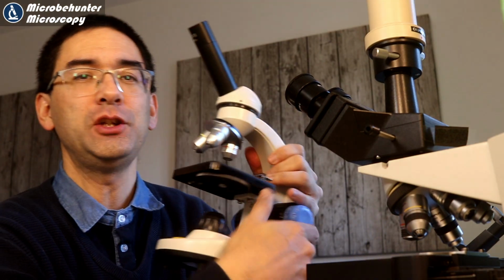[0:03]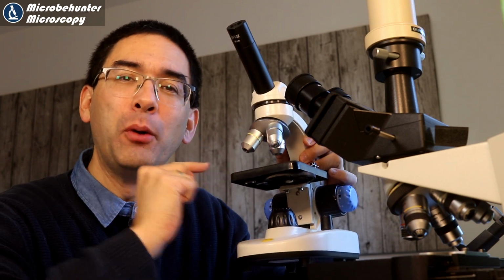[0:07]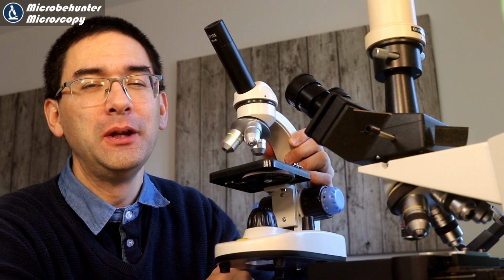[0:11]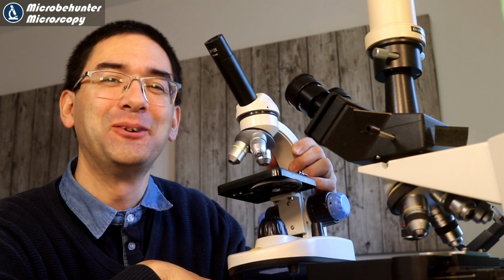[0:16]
Hi, Microbehunter here. This here is a low-cost introductory microscope, and today I want to convert this one to a polarized light microscope. It's not that difficult to do, but I did some tinkering today and I also took the microscope apart. So let's have a look at it.
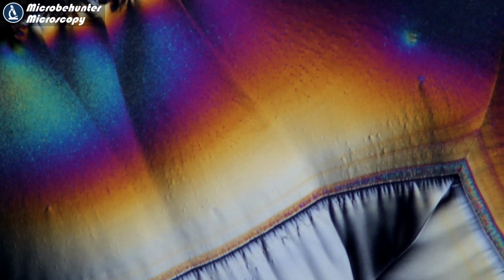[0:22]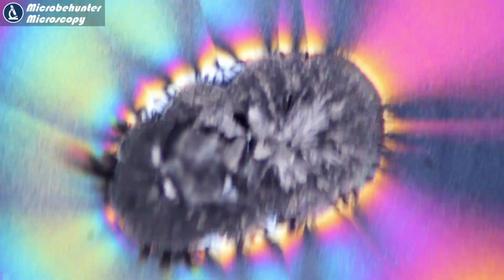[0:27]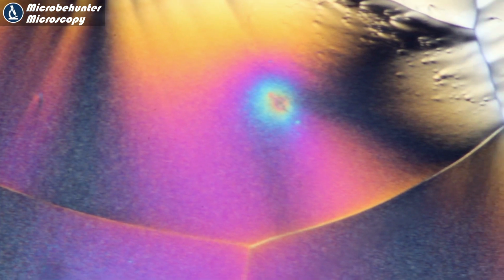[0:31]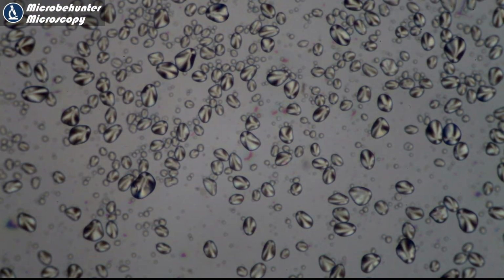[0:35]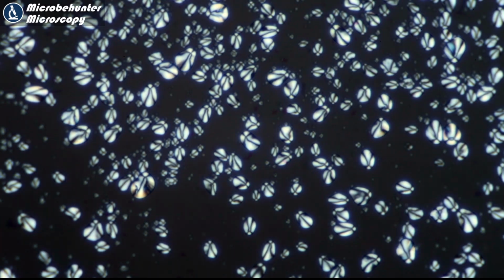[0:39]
So first of all, I want to show you some pictures in polarized light simply to make you a little bit motivated to try out this method. This here, for example, is crystallized vitamin C. I've actually made a separate video. Link is below in the description. And these things here are potato starch grains. And you can also now see that in polarized light, they start to shine up nicely on a dark background.
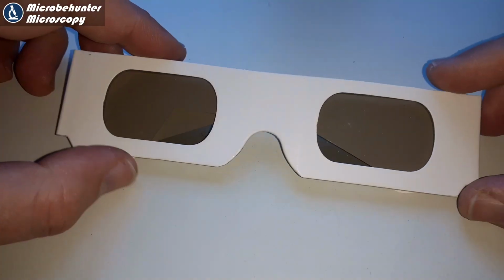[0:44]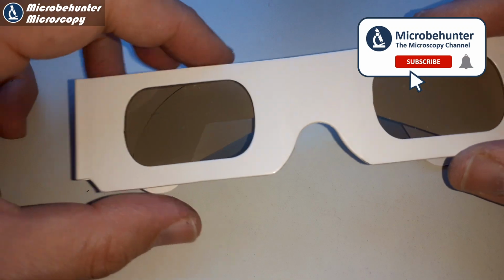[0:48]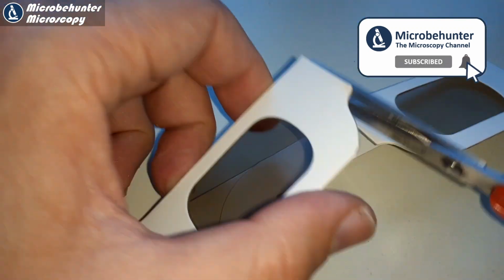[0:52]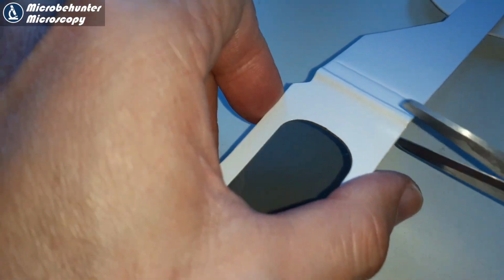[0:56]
If you want to do polarized light microscopy, all you need is those 3D glasses. Be careful, not all of them work. They have to be or should be RealD compatible, whatever that means. I also put a link into the description here.
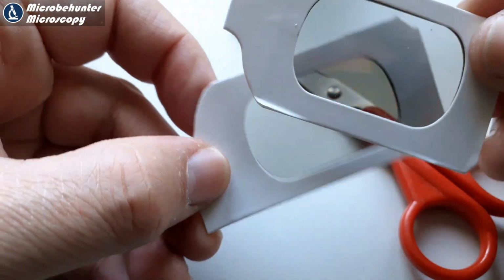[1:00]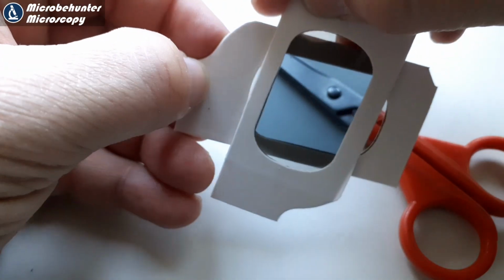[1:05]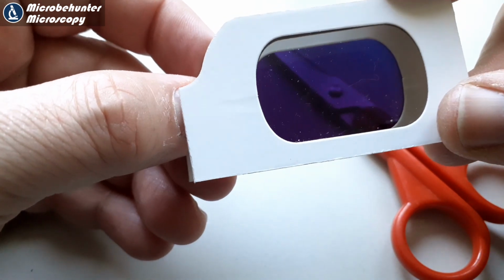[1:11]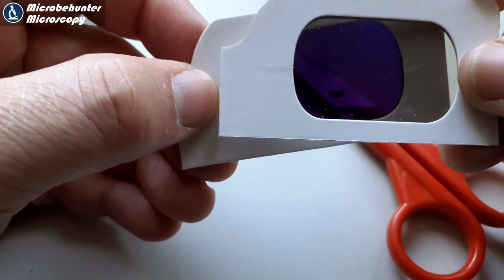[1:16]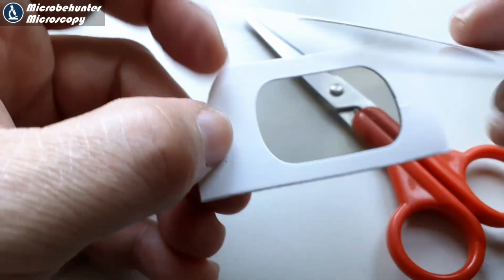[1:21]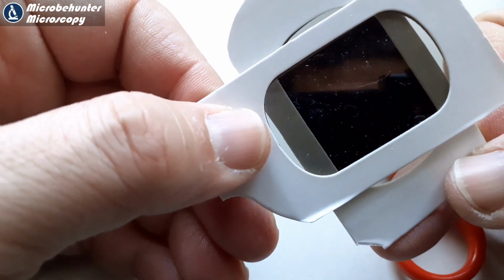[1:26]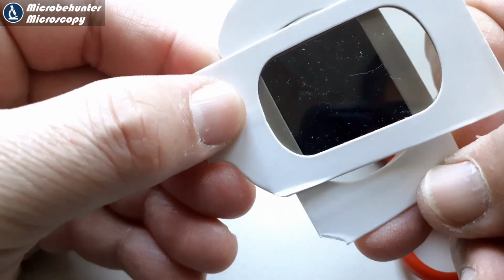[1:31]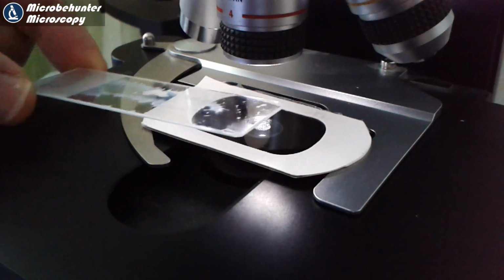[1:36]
And now you have to place them over each other in a correct orientation, and you have to rotate them against each other. And this orientation does not work, for example, because it does not turn completely black. This one here is already better, but you can still see that a little bit of light is able to go through. It might be a little bit difficult to see here on the video, but there is one orientation that, if you try that out, will actually be completely black. So that's the one that we want, okay? And if you're able to find this orientation, then you better remember how they are placed on top of each other, because this is the orientation that we have to retain when we put it under the microscope.
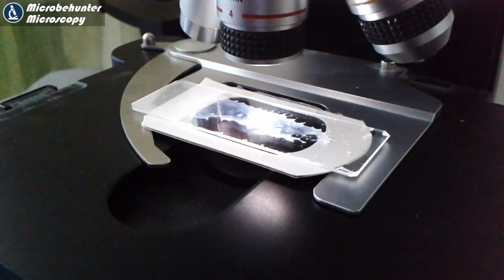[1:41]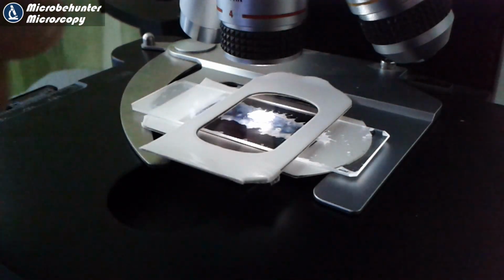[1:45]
So right now I'm simply placing the filters on the stage, the specimen slide on top, and then the second filter. My recommendation is that you buy yourself some linear polarizing filters. They're a little bit more expensive than those 3D glasses, but they make life a little bit easier because the orientation and the side is not important at all. Those 3D glasses have so-called circular polarizing filters, and there the orientation is kind of important. And if you accidentally flip the filter around, you won't get a proper effect.
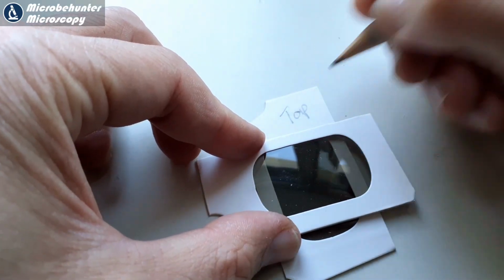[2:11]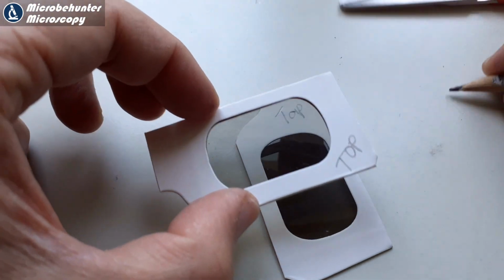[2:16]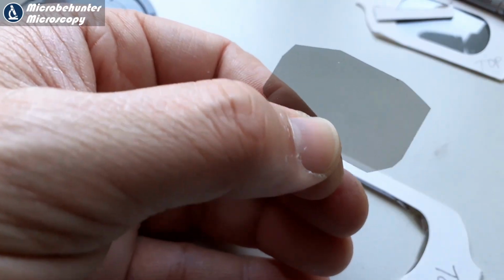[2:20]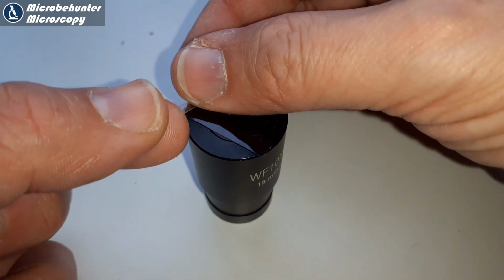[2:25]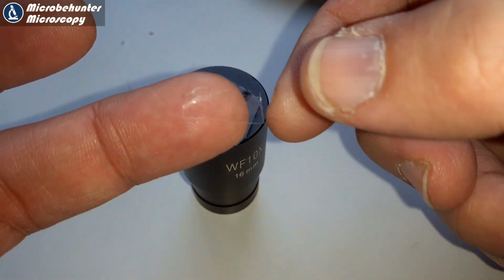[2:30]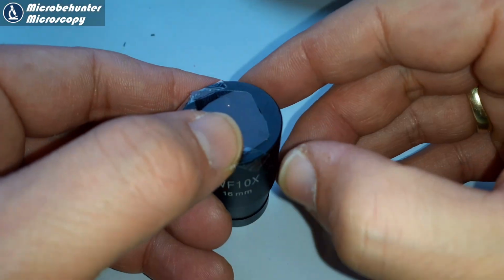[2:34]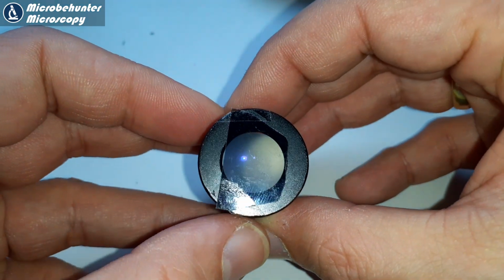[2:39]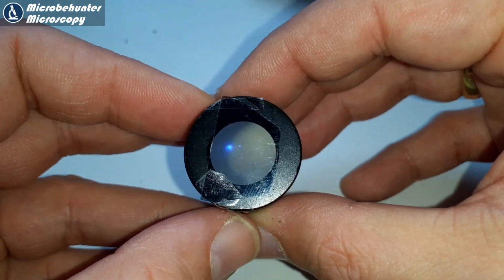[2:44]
Yeah, so I labeled the filters so that I'm not going to confuse the orientation. And then I started to cut it out, but then of course you're also cutting away the label. That's a little bit something unforeseeable. And I decided to simply place one of the filters on top of an eyepiece, just like this. I wanted to try this out this way. So instead of simply placing one filter on top of the slide where it could get in contact with the mounting medium or the specimen, I thought that this is actually a much more convenient way of solving the issue.
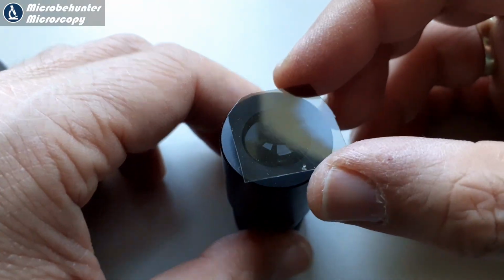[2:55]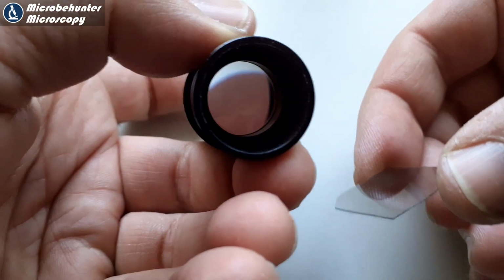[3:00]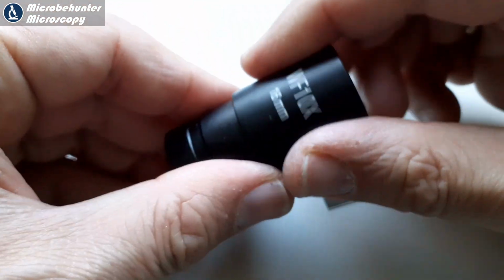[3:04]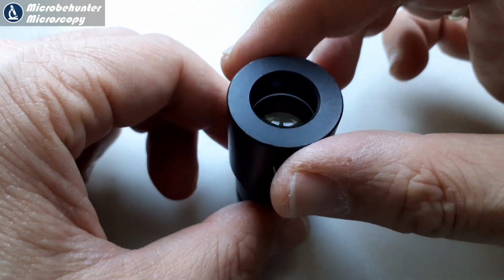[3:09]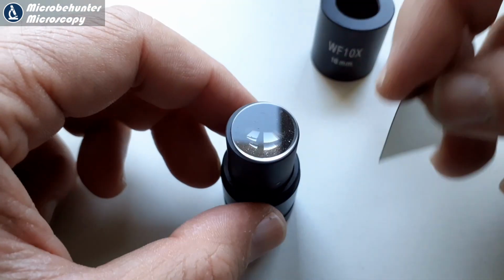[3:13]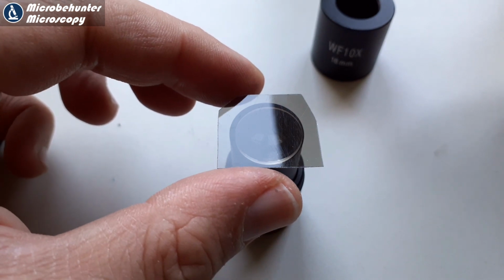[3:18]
Well, I think that the filter directly stuck onto the front of the eyepiece looks kind of ugly, so I do want to hide it a little bit. Yeah, some eyepieces can be taken apart. So I started over with a slightly larger filter, and I tried to find a place in the eyepiece itself where I could place the filter. I could unscrew it. Please be careful that the lens in there, the front lens, has to be placed in the correct orientation. In this case, the flat surface of the lens is on top. And I simply placed the filter on top here.
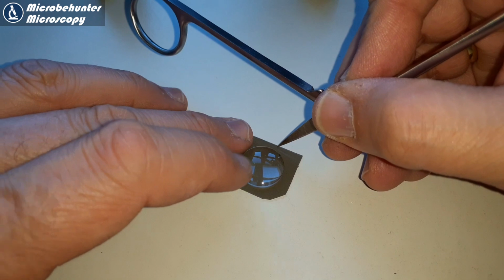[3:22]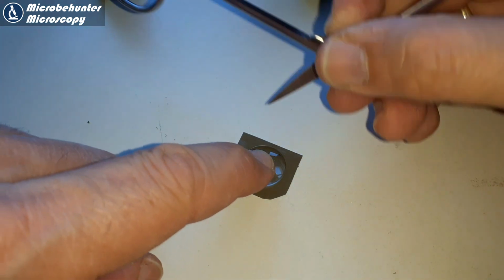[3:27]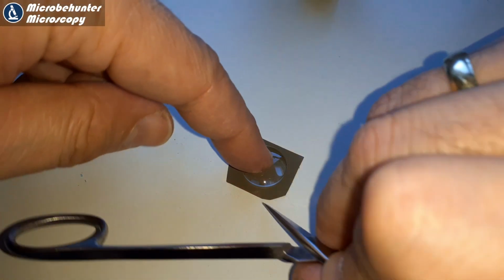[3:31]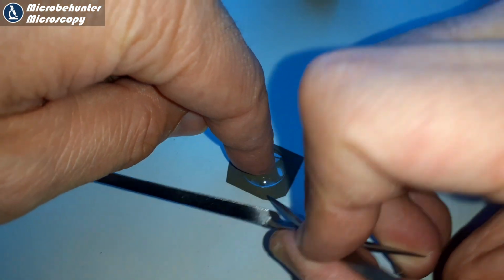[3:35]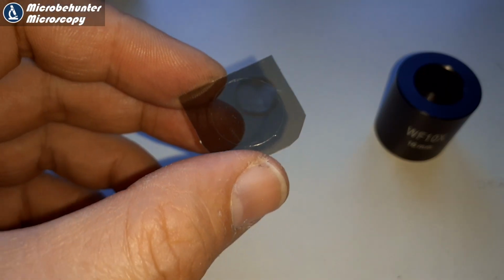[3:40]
I marked the filter, I scored the filter with a sharp pointed object, simply so that I know where to cut out the filter. And then after about 3 minutes of intense work, I had in my hands a beautiful round polarizing filter, which you then could directly place into the eyepiece.
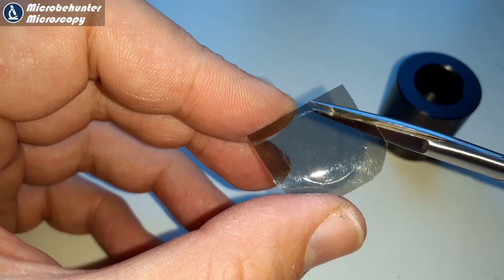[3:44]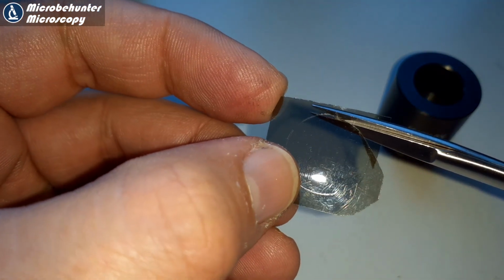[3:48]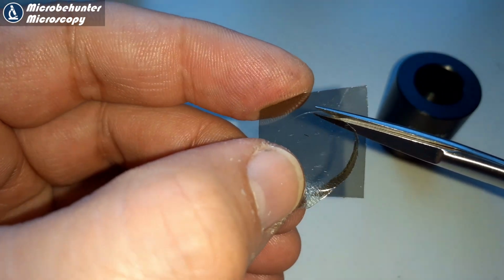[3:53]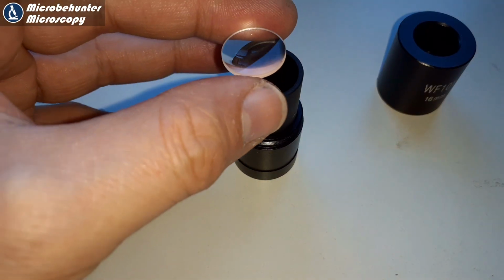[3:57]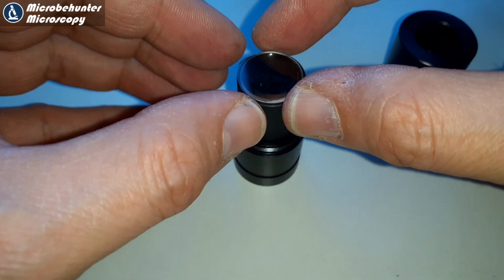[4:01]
Now, if you do not want to use polarized light microscopy anymore, then it's enough that you simply remove one of these filters. So if you do not want to remove the filter of the eyepiece, then you can also remove the filter which is placed beneath the specimen, and then you will also lose the polarization effect again.
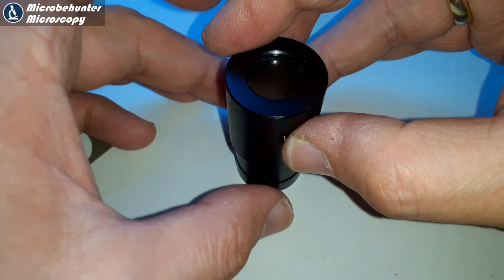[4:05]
But in any case, that's pretty self-explanatory. I put the eyepiece back together. Well, that was kind of easy, but I do have a 3D printer and I wanted to now try to construct a filter holder using my 3D printer.
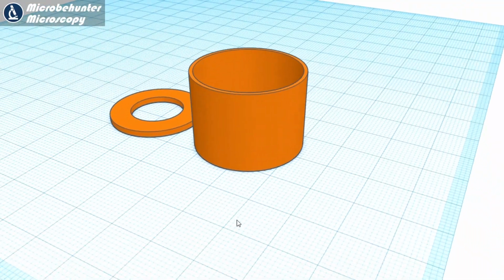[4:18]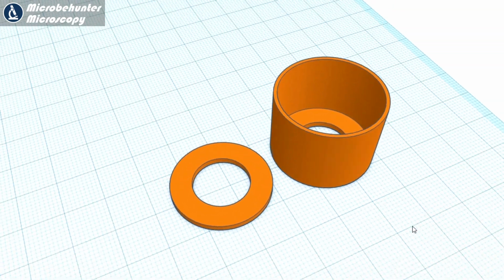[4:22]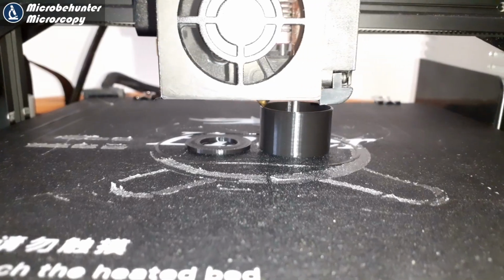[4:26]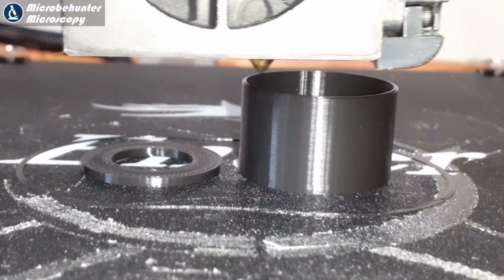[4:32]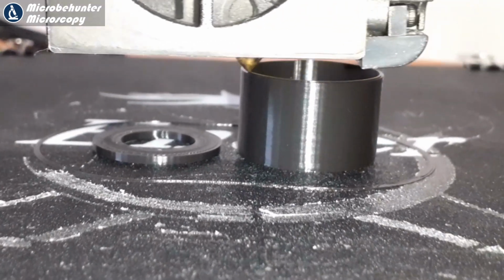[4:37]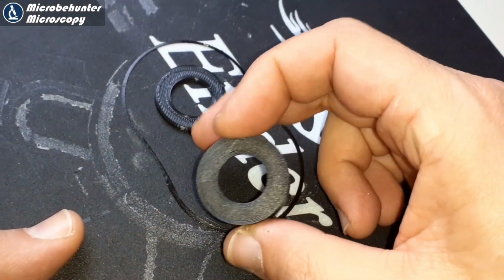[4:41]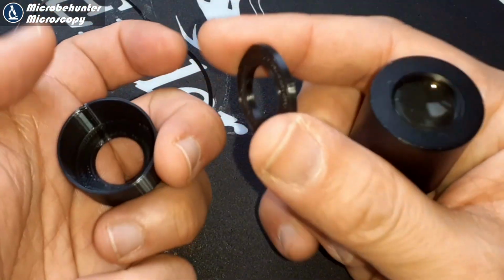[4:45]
Well, there is the saying, if you have a hammer, then every problem appears to be like a nail. And same here. I have a 3D printer right now, so I simply said I have to try this out using my new 3D printer. So I designed a filter holder for my eyepiece, and after about half an hour of printing time, I had a very nice filter holder.
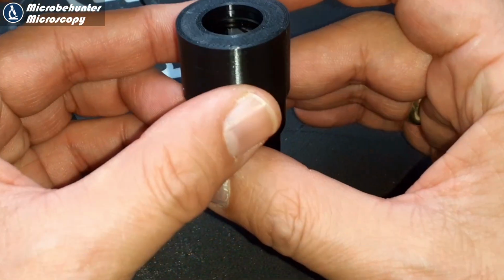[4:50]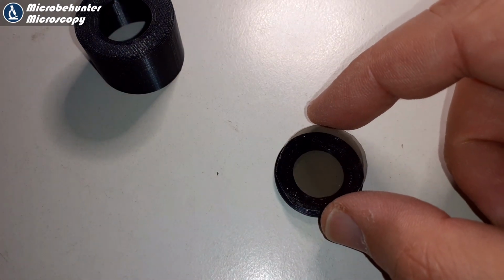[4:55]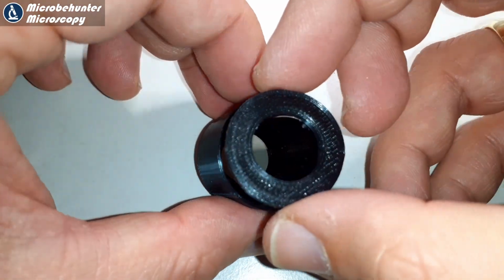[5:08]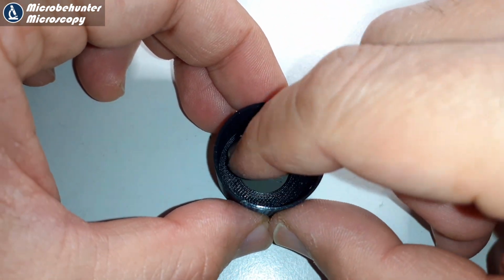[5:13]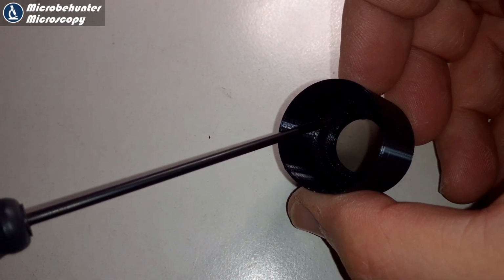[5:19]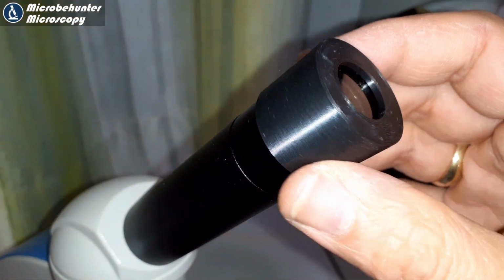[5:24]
What I have to do now is glue the filter into this plastic cap, which can then be placed directly on top of the eyepiece. And here we go again. Make sure that the filter is glued on with the correct side, because these are circular polarizing filters, and here the orientation is very important. Yeah, and then it goes into the newly made cap. And I used again some glue to fix the ring into place. Here I put some glue on a screwdriver because it could not reach the edge with the glue bottle. And it simply goes over the top of the eyepiece.
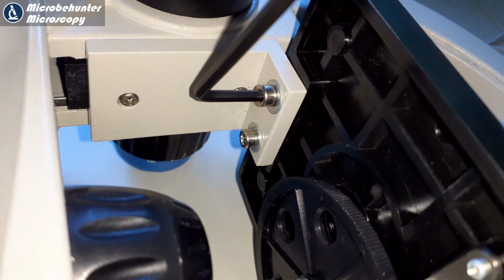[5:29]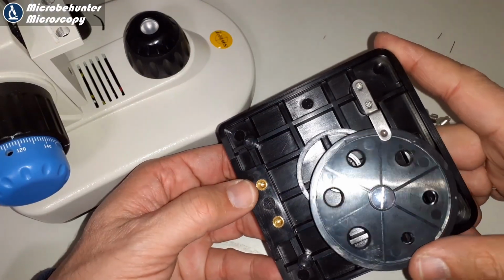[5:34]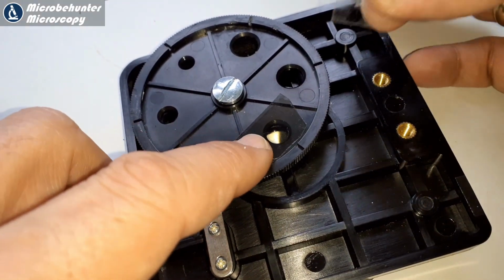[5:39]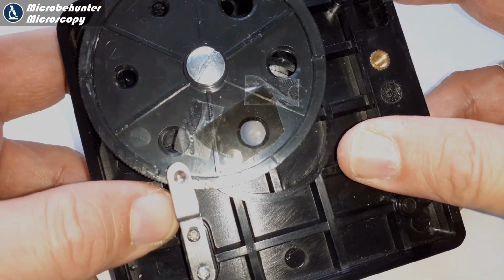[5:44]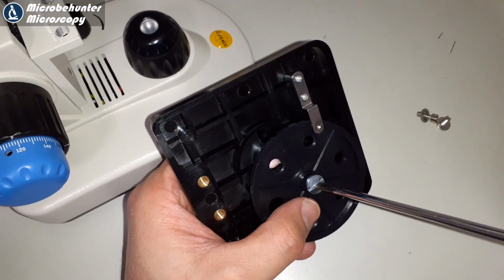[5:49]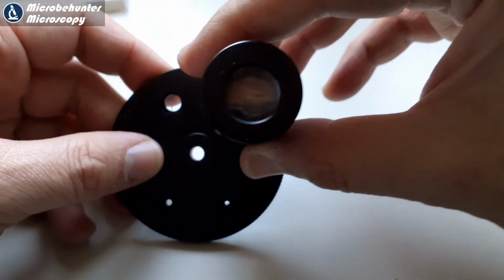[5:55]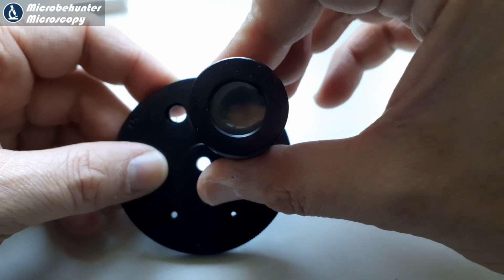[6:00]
And I was all happy, and I decided, okay, what I'm going to do next is put the other filter on the bottom of the stage. So I tried to place it directly over one of these holes, which are supposed to control the aperture. Well, they are too large anyway, in my view. So I glued a filter directly on top of it, and I also wanted to unmount it to check the other side. And it's possible now, if you rotate the eyepiece, to see that it still works quite well. So the orientation is correct.
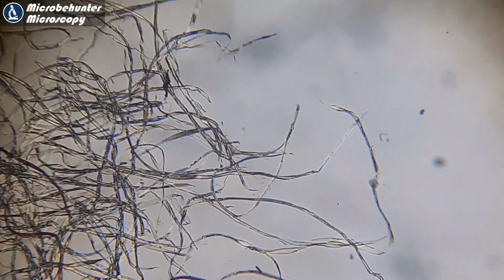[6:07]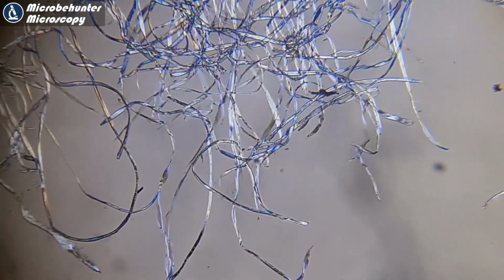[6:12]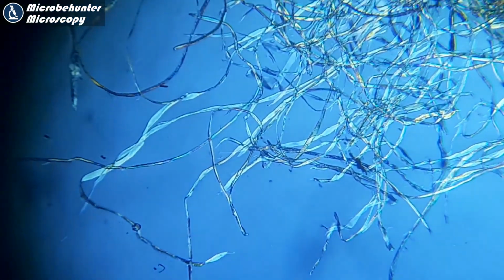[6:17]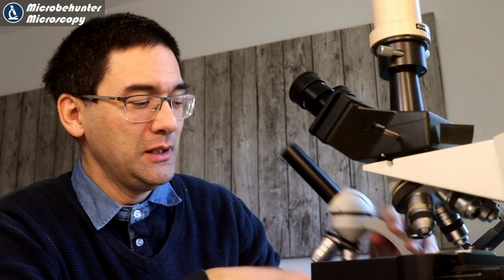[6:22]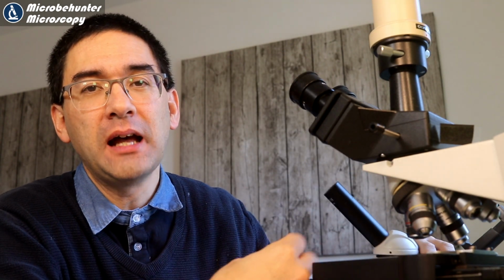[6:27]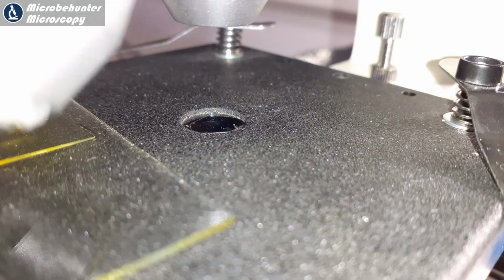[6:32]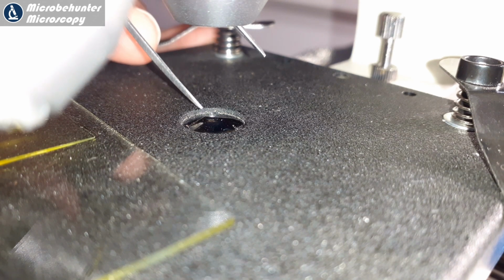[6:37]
And now I wanted to try it out. So I put some synthetic fibers under the microscope, and I rotated the eyepiece. I'm using a mobile phone camera right now. Look at this. Not a lot happens. The background does not turn completely black. So this is not supposed to be. That's kind of strange. Well, my first idea was that the plastic lens in the stage caused the light to become depolarized. So I moved the filter on top of the plastic lens. But unfortunately, this also did not produce the desired results. So I had to continue to look for the mistake.
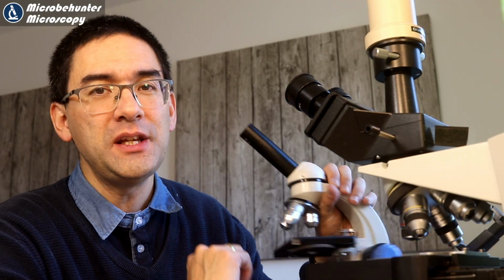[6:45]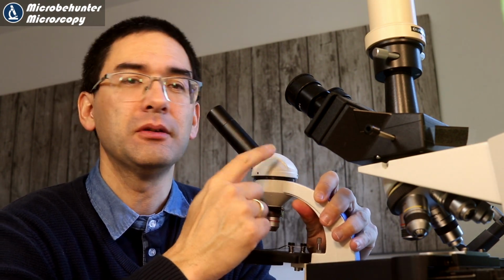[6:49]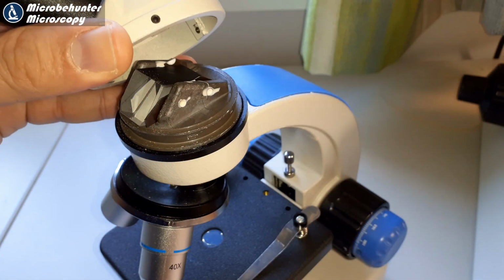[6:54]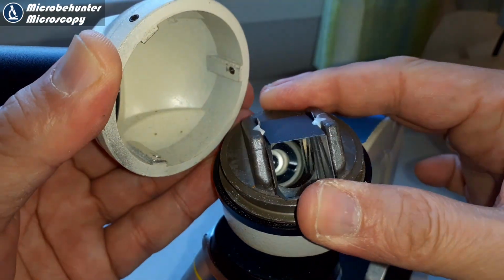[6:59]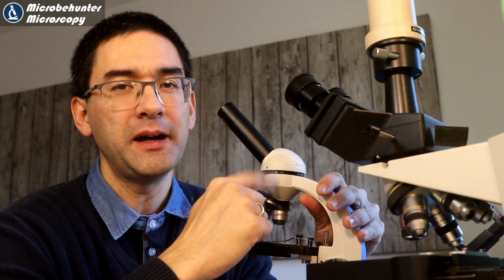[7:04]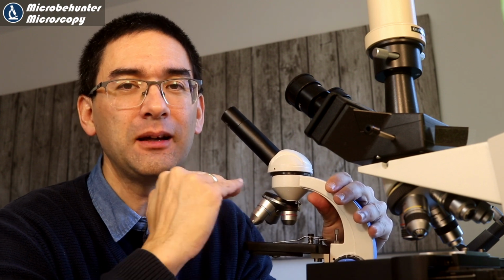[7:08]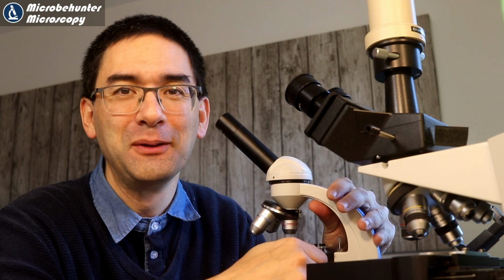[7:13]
Well, after some more experimentation, I found out that the reason why I did not get a proper effect is because there is a prism in the tube of the microscope, and this prism is responsible for depolarizing everything, so it kind of messes up everything. So what I have to do is move the filter away from the eyepiece to below the prism, and I have to find a place somewhere. But I don't really want to place the filter directly on the slide, so I have to look for a different possibility here. Well, and ultimately I did find a place.
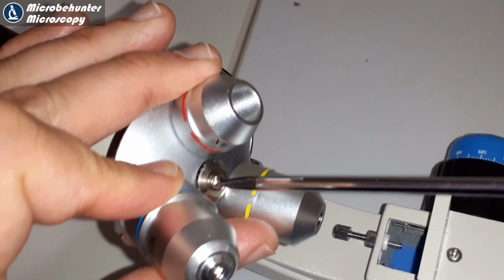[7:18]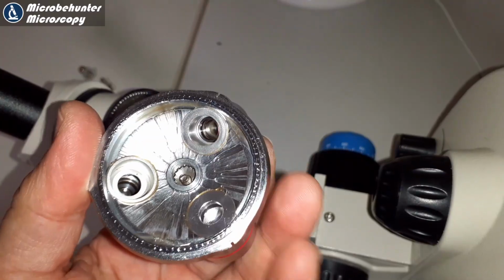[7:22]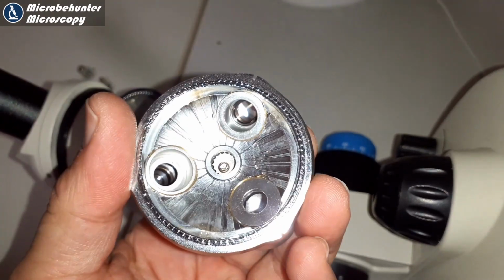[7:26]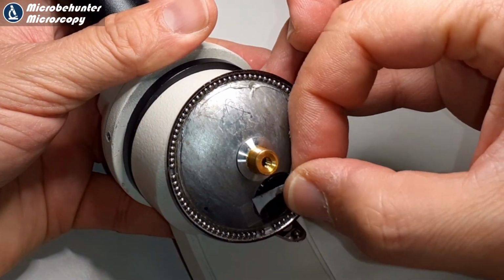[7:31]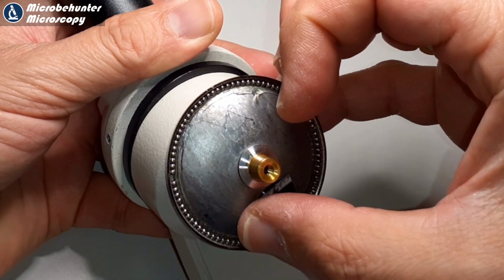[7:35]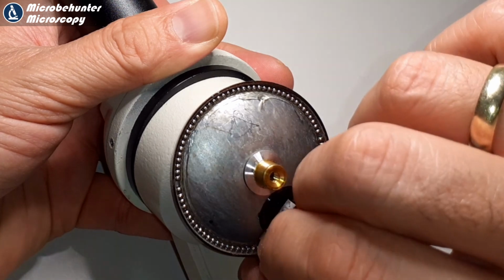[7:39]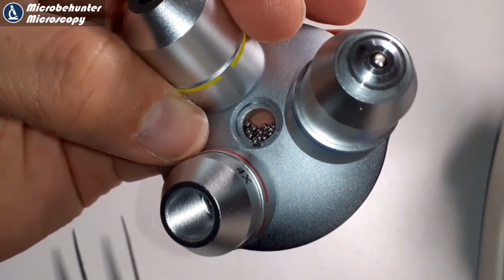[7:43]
I carefully detached the revolving nose piece, and look what you see here. These are a lot of small steel balls, because the whole thing is a ball bearing. And honestly, this is the place where I tried to put the filter, but the tape wouldn't hold. Look at this, it simply wouldn't stick. The reason is that there's so much grease in the area that the glue simply wouldn't hold. And here I lost some of the steel balls, something you have to be careful about.
So what did we learn from this? Don't take apart your microscope unless you really have to. Don't touch a running system, in other words. It took me several minutes to actually put the microscope back together again, and I almost lost a few of these tiny steel balls.
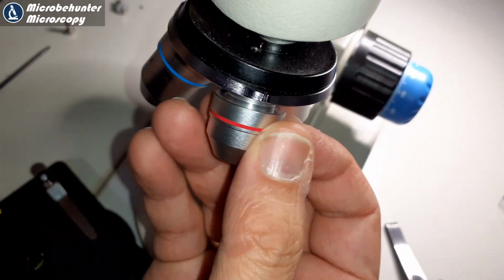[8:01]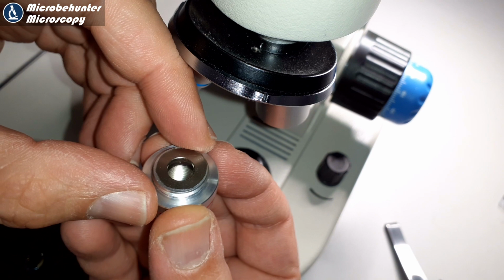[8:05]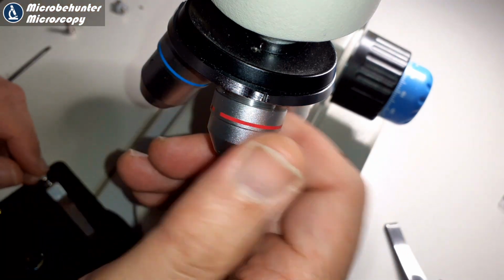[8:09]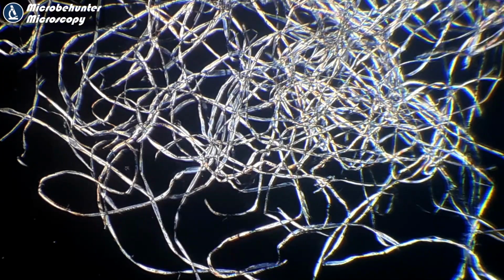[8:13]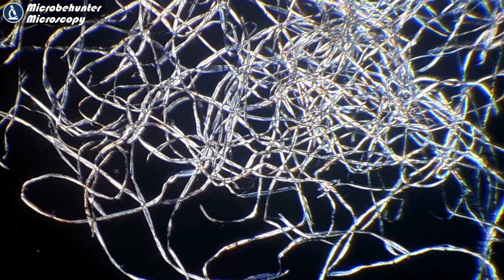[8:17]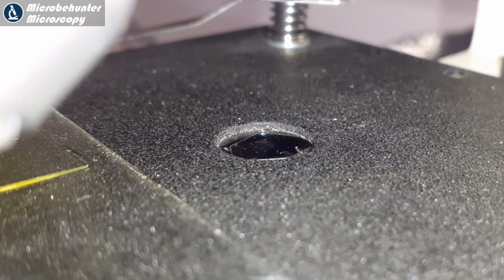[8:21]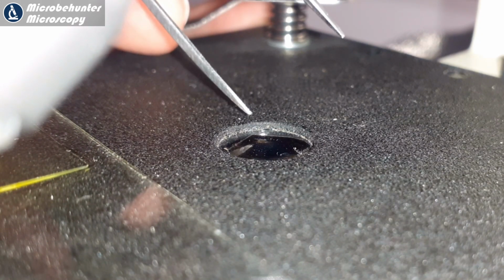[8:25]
Yeah, so I tried to find another place right here above the objective, and as a matter of fact, yes, this system is actually the system that seemed to have worked quite well. Simply place one of the filters in there, and now look at these fibers, nice and dark background as it's supposed to be. It was again a little bit more motivated than before, and the filter here on top, it was very difficult to rotate, however, right?
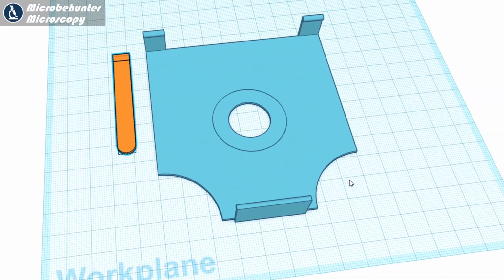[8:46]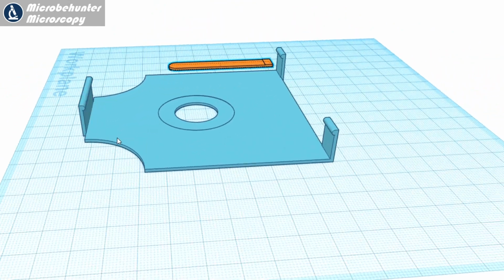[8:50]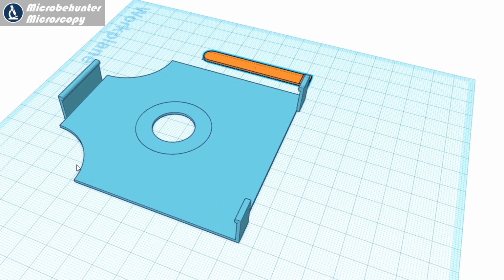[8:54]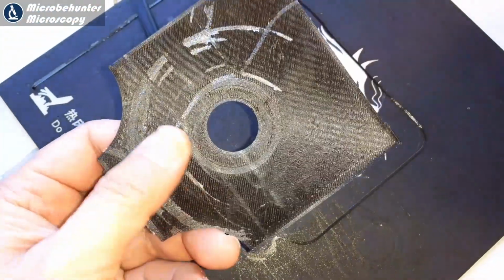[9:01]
And I did not want to scratch the plastic lens, so there's got to be a better solution. Yeah, and so I decided finally to also 3D print a stage adapter. I have to admit, it's probably a little bit of an overkill. It would be much faster if I simply would have used a little bit of cardboard or some plywood to make such an adapter. So back into my very simple CAD, computer-aided design program, and this is what I designed. Contraption goes on top of the stage. Took me about, I don't know, an hour to design the whole thing, all of the measurements, and another hour to get the whole thing printed.
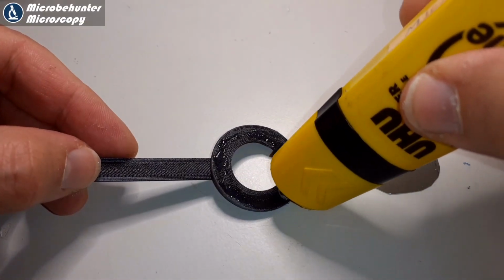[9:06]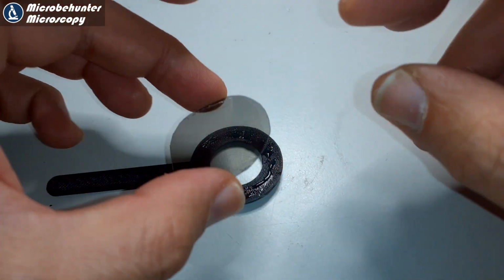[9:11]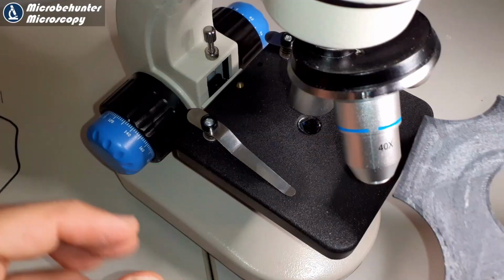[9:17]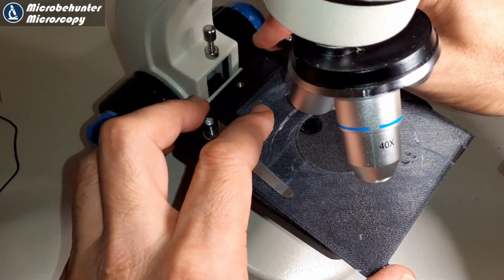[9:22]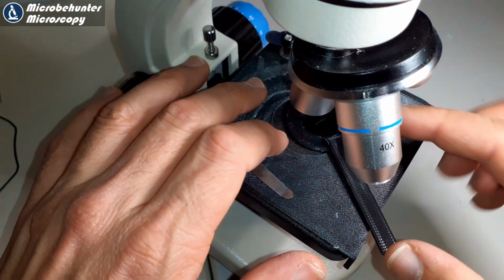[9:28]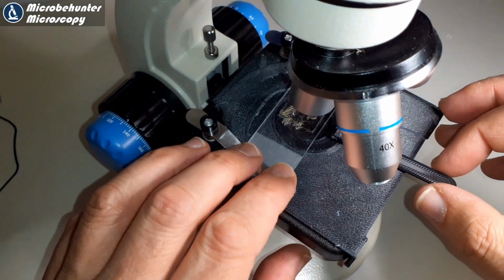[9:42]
The original impression was quite good. Again, I had to glue the filter on top of the filter holder here, and now you also notice that there is a small handle here, which allows me to rotate the filter much more easily. The whole thing goes directly on the stage, as you can see here. And then also the filter goes into the hole there, and it was very, very unstable. Look at this. It was very unstable. I tried to place a slide now on top of the filter holder, and by moving the filter back and forth, I was also moving the slide, and the whole thing was simply way too unstable.
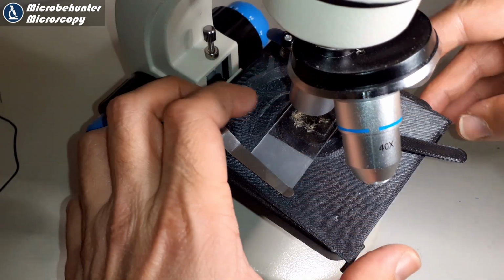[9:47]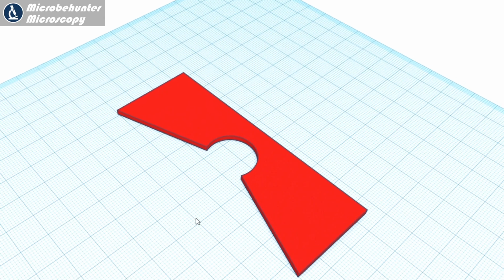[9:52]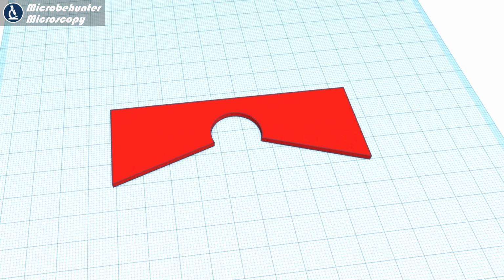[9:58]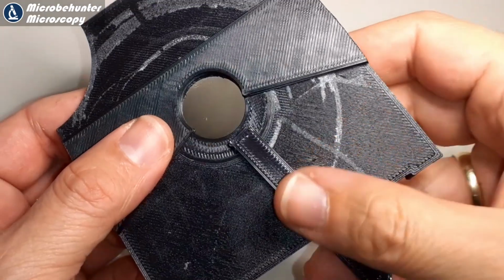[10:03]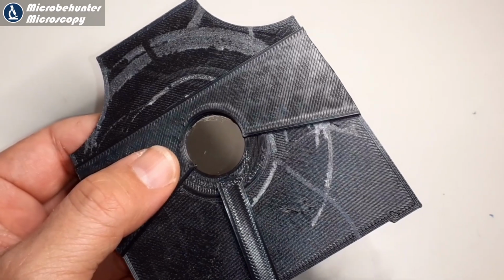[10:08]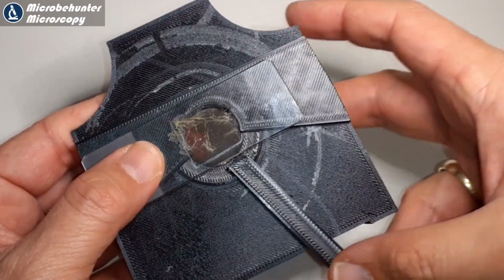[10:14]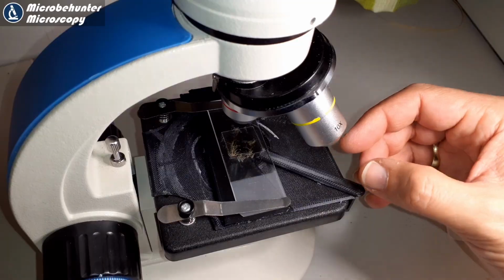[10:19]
So I said, okay, back to the drawing board. I need to improve the system again a little bit. So what I've done is I've designed a spacer, which basically increases the distance between the filter and the slide here, so that the rotating filter holder does not get in contact with the slide. So now you can see how the system's supposed to work. The slide is now located above the filter and can now be freely rotated. Yeah, so this is basically the system that I tried, and now everything seems to be much more stable. Was quite happy and satisfied. Here's a slightly closer look.
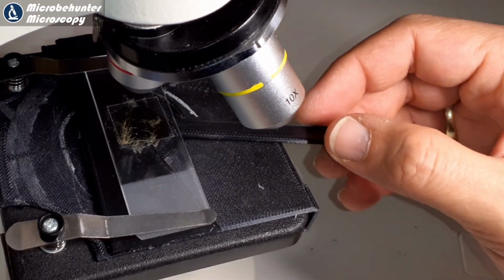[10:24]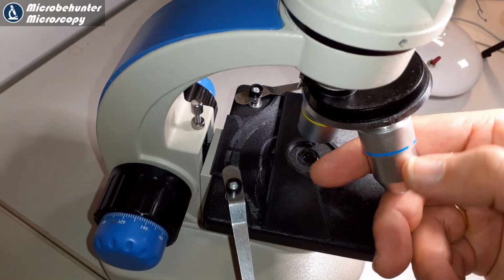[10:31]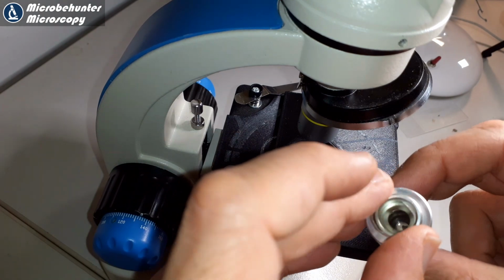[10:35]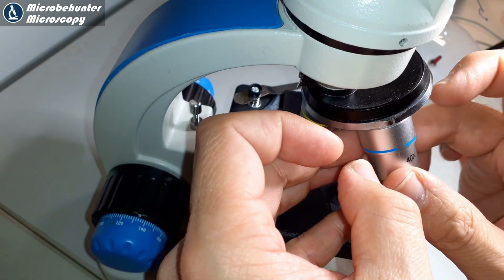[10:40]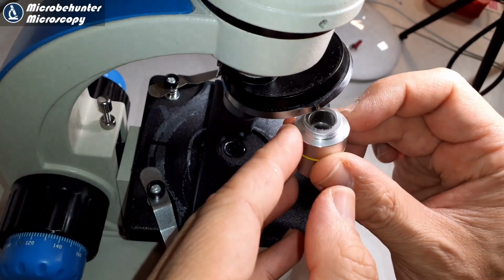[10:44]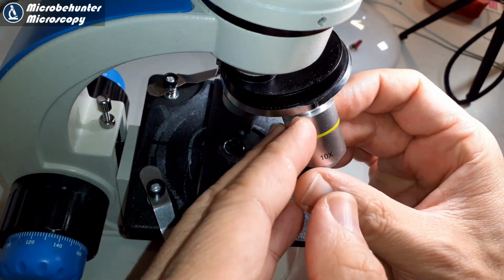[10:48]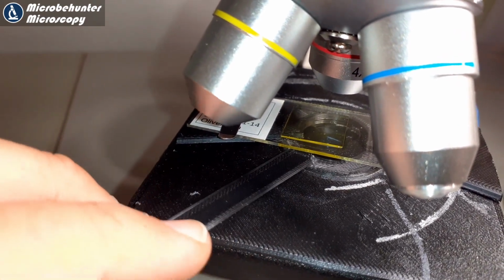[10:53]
And the last thing I had to do now is I had to install the filters also in the remaining objectives, and this is also something that I've done here. And sometimes it was not so easy to place the filter in there because there was not enough space, but ultimately, it did work. Last check here again. Sometimes the filters fell out before I could actually connect the objective, but it seems to be okay. And now let's test the whole thing again.
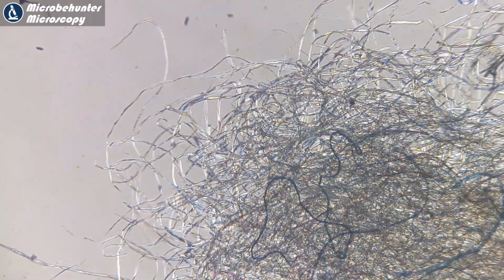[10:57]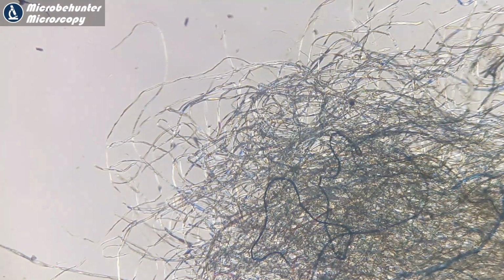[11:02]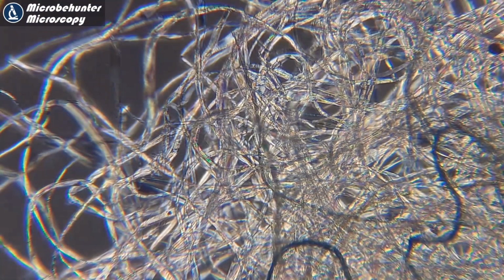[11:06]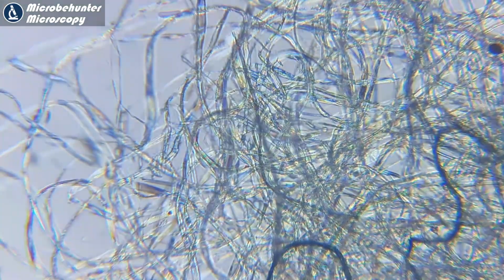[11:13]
And this time I'm again using the fibers, and look, this is at four times objective, and look, when you rotate the filter, that works quite nicely. This is the 10 times objective, and rotating the filter gives you a very nice dark background. And if you don't like to work with polarized light, then you simply remove one of the two filters again.
Yeah, so that's it. It finally did work after a long series of trial and errors. I think changing your microscope for polarized light is definitely something worth trying. I think 3D printing indeed is not really worth it because there are so many easier ways. I would say experiment a little bit, use some cardboard, use some plywood, or simply place the filters directly beneath and on top of the slide.